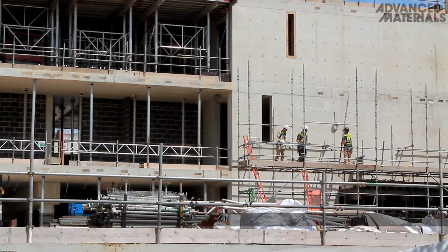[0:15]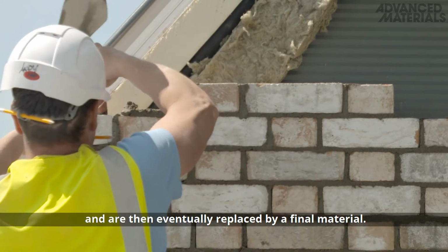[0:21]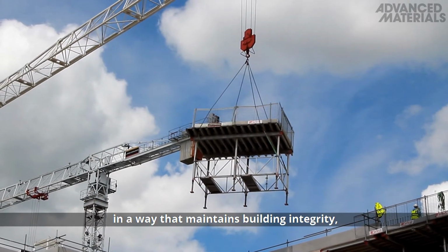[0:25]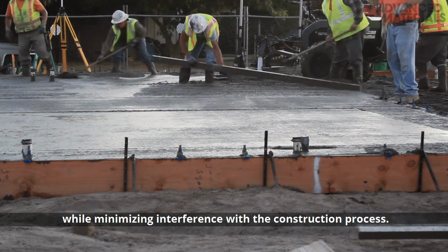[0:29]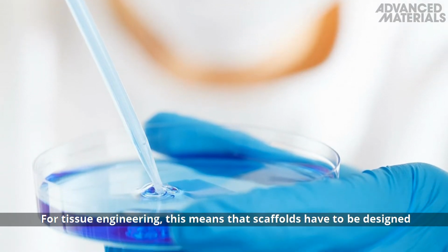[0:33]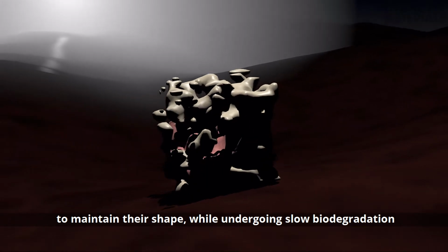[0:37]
Scaffolds provide essential support to buildings that are being constructed and are then eventually replaced by a final material. The trick with scaffolds is that they have to be removed in a way that maintains building integrity while minimizing interference with the construction process. For tissue engineering, this means that scaffolds have to be designed to maintain their shape while undergoing slow biodegradation and
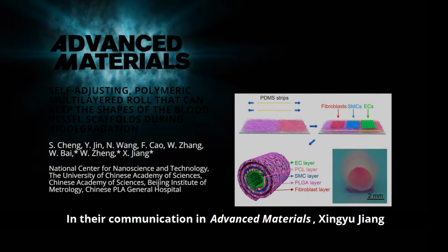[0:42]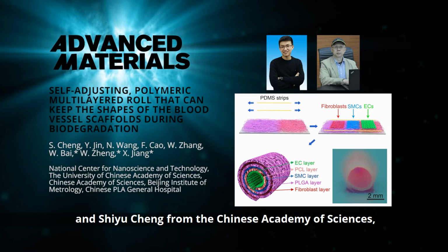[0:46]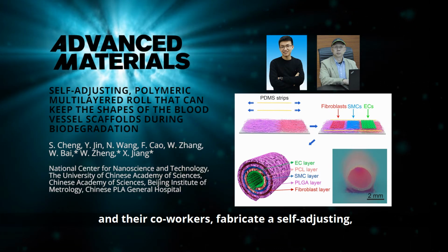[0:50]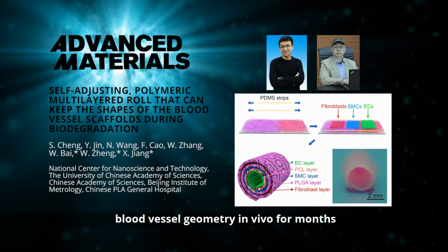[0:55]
replacement by host tissue. In their Communication in Advanced Materials, Xingyu Jiang and Shiyu Cheng from the Chinese Academy of Sciences and their co-workers fabricate a self-adjusting, blood vessel-mimicking polymer structure that maintains blood vessel geometry in vivo for months and is efficiently replaced by host tissue.
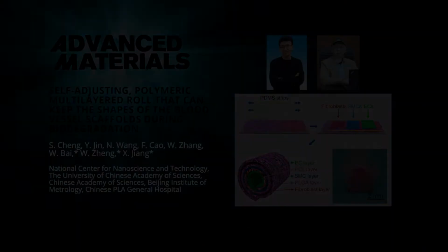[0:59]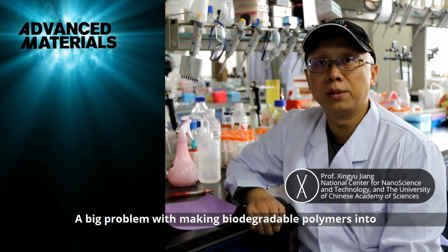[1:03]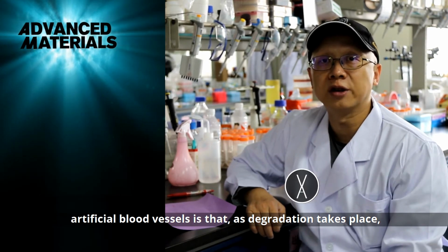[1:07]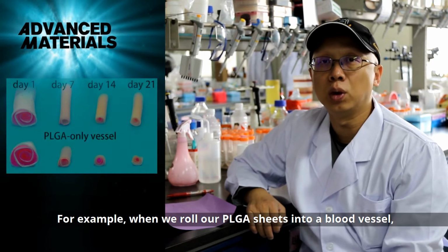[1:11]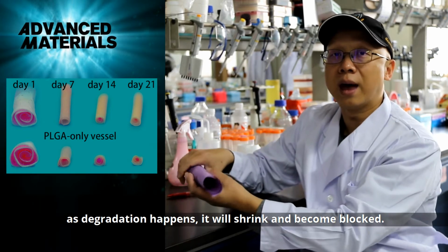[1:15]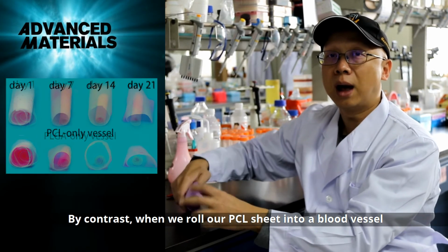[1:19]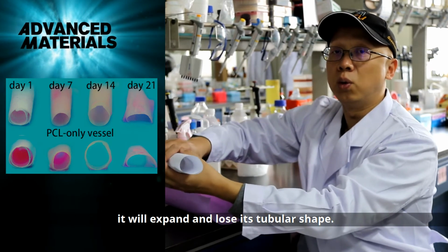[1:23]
A big problem with making biodegradable polymers into artificial blood vessels is that as degradation takes place, the vessel loses its original shape. For example, when we roll out PLGA sheets into a blood vessel, as degradation happens, it will shrink and become blocked. By contrast, when we roll up PCL sheet into a blood vessel, it will expand and
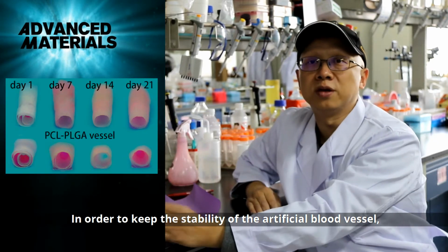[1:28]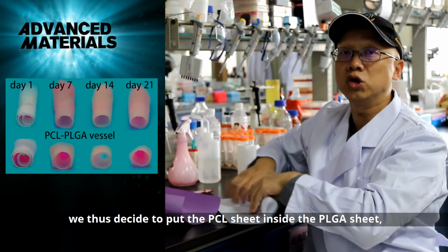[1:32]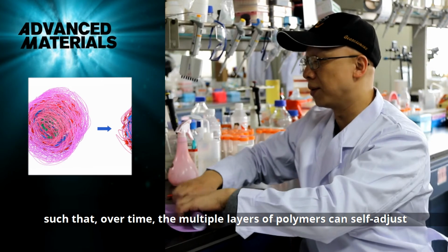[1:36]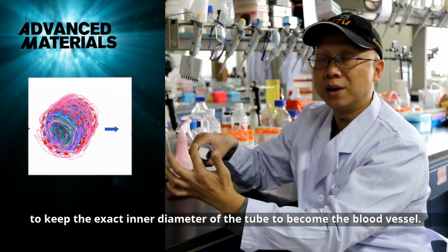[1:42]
lose its tubular shape. In order to keep the stability of the artificial blood vessel, we thus decide to put the PCL sheet inside the PLGA sheet, such that over time, the multiple layers of polymers can self-adjust to keep the exact inner diameter of the tube to become the blood vessel.
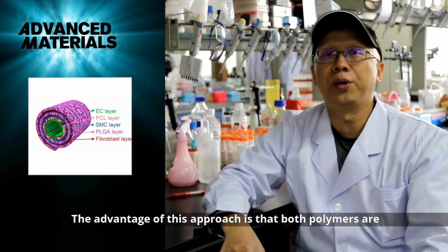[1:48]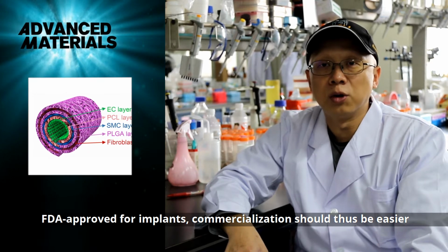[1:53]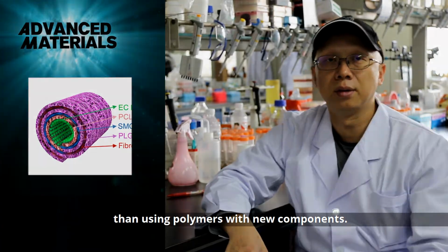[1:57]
The advantage of this approach is that both polymers are FDA approved for implants. Commercialization should thus be easier than using polymers with new components.
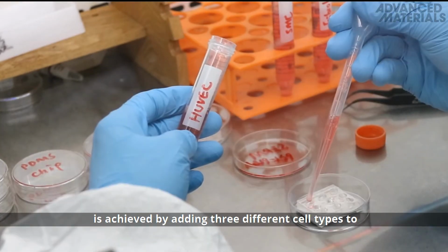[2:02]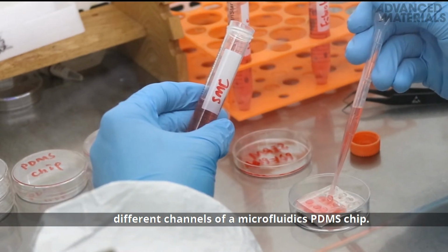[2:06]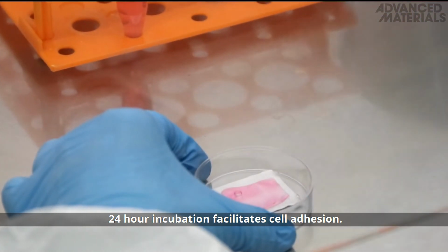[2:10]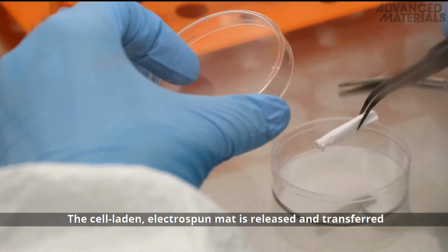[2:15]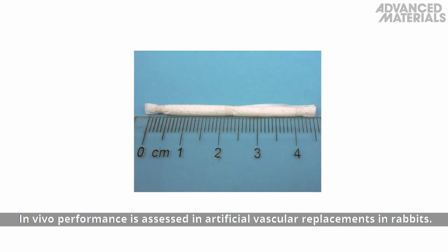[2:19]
In vitro patterning of the stress-induced rolling membrane is achieved by adding three different cell types to different channels of a microfluidics PDMS chip. 24-hour incubation facilitates cell adhesion. The cell-laden electrospun mat is released and transferred into a new well in order to assess long-term stability. In vivo performance is assessed in artificial vascular replacements in rabbits.
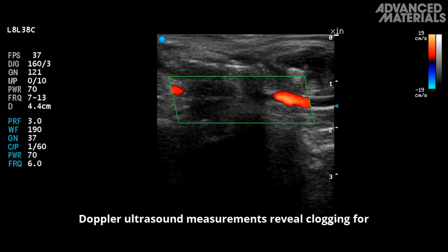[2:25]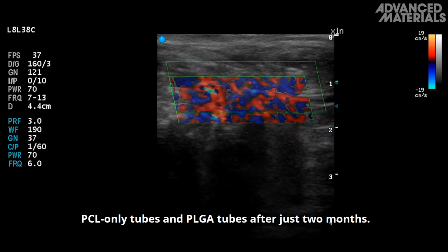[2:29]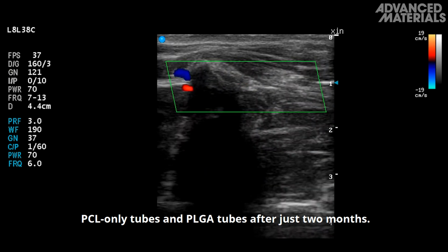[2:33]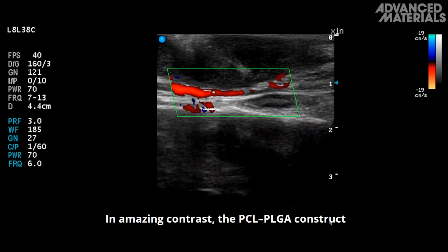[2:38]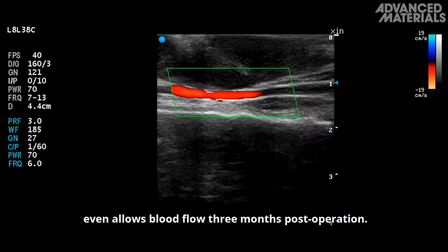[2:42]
Doppler ultrasound measurements reveal clogging for poly-epsilon-caprolactone-only tubes and poly-DL-lactide-co-glycolide tubes after just 2 months. In amazing contrast, the PCL-PLGA construct even allows blood flow 3 months post-operation.
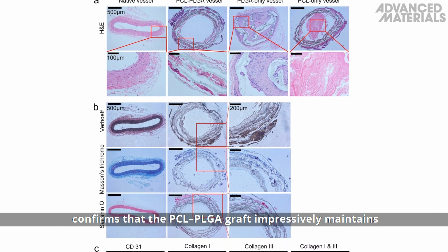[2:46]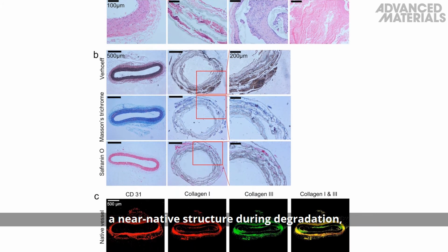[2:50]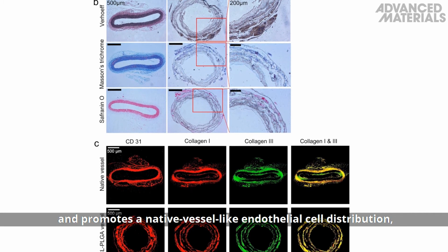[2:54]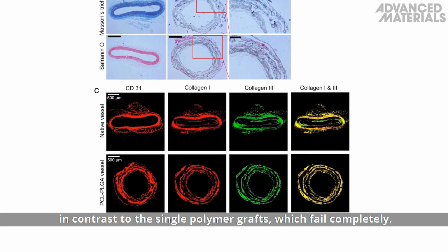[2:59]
Histological and immunological staining 3 months post-operation confirms that the PCL-PLGA graft impressively maintains a near-native structure during degradation and promotes a native vessel-like endothelial cell distribution, in contrast to the single polymer grafts, which fail completely.